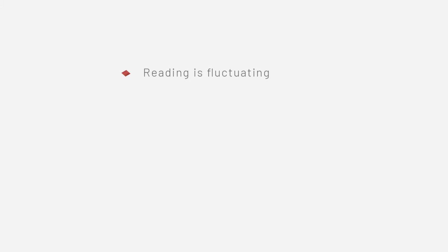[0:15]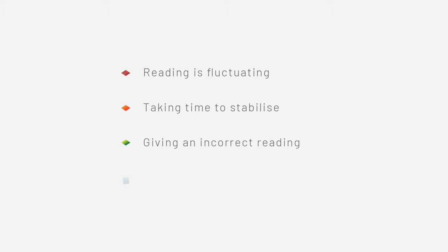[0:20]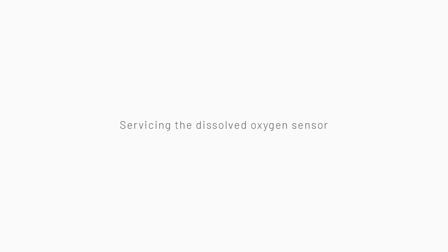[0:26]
Today, I'd like to show you how to service the sensor on an OxyGuard portable dissolved oxygen meter. We should change the membrane when the reading is fluctuating, taking time to stabilise, giving an incorrect reading, or the actual membrane is physically damaged. Other than that, no routine maintenance is required.
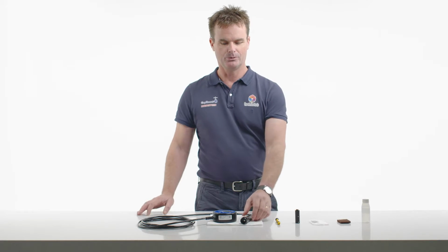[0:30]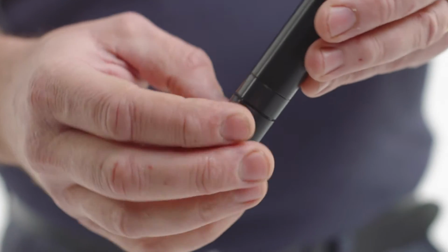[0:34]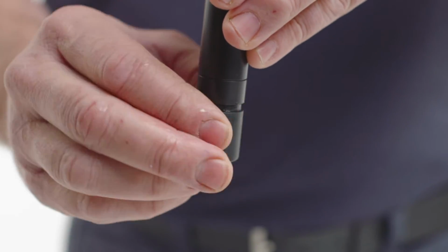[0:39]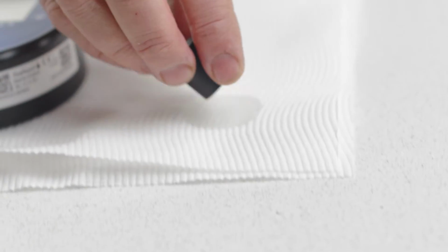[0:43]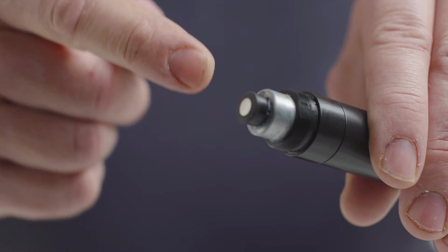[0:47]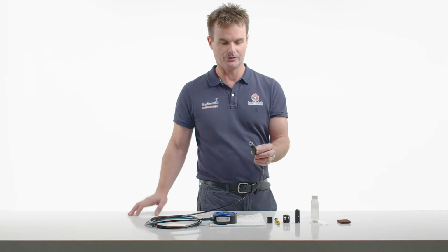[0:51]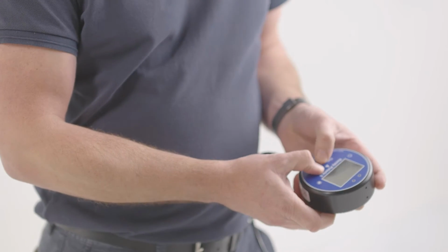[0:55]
To service the probe, remove the membrane protector. Unscrew to remove the cap, and you may notice a small amount of electrolyte inside. Simply dispose of the electrolyte. Being a galvanic cell, it has an anode and a cathode on the end. Therefore, without any electrolyte, there's no voltage from the probe whatsoever. So when the probe is clean and dry, there should be a zero reading.
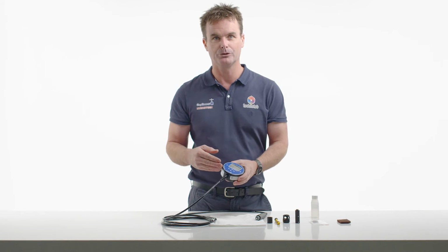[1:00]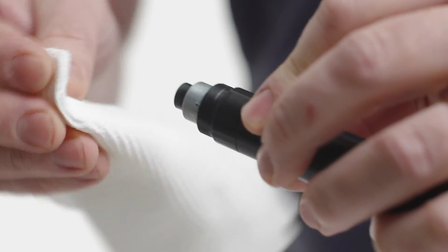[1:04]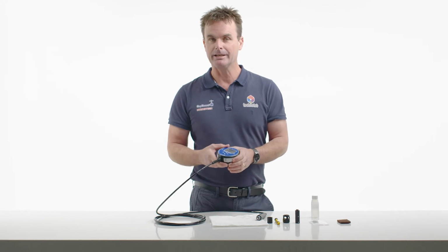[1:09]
If you're finding there's a background reading between 0.1 and 0.2 milligrams per litre, the probe may require a little further cleaning. Or, if the background reading cannot be removed by cleaning and drying, then the instrument may need to be returned to Technolab for further investigation.
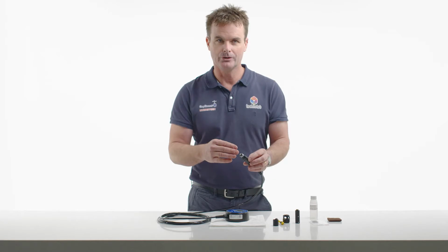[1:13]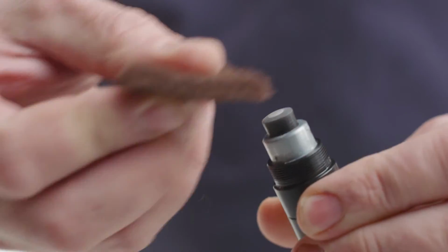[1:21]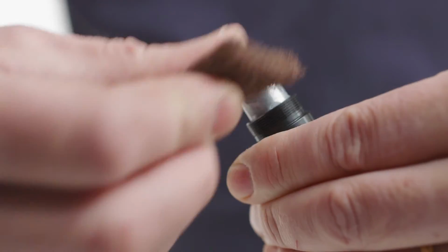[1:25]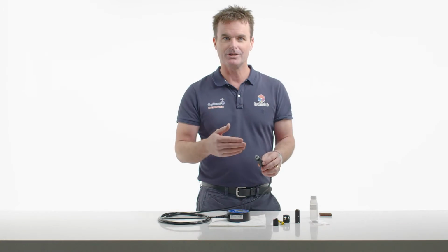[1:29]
You may also notice white deposits around the probe. These are dried electrolyte salts. You can clean these with a scouring pad, which comes as part of our kit. It's very important just to give the end of the probe a light scour in a rotating fashion to gently clean the cathode. The probe is now clean, dry and bright. The meter reads zero and we're now ready to change the membrane.
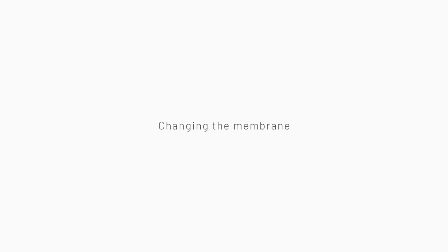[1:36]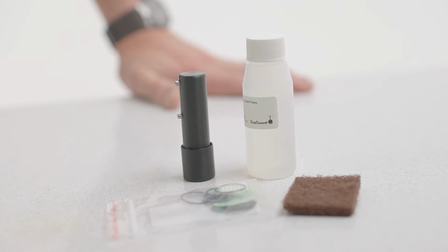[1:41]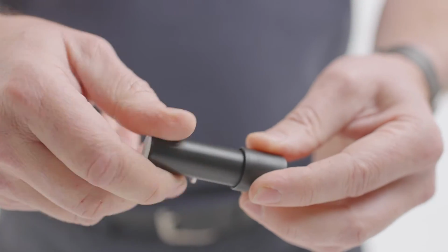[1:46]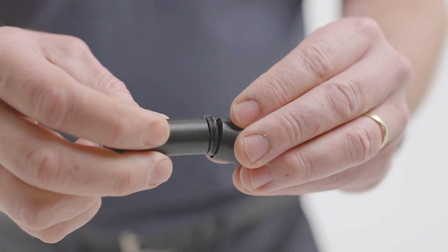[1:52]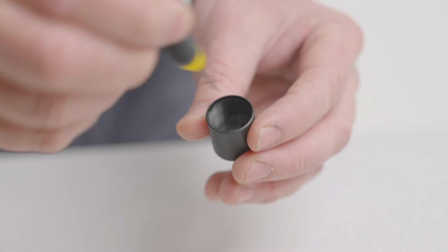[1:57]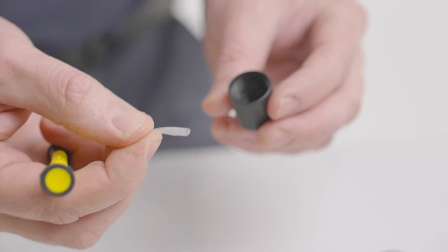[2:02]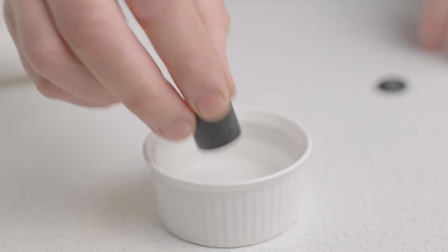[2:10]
The universal tool supplied in the kit will open the back of the meter and also removes the template which is holding the membrane in place. Simply rotate to take the template out of the cap. Use a small screwdriver to carefully remove the membrane. You'll also need to remove the small O-ring too. The O-ring and the membrane should always be changed at the same time. The cap can then be rinsed in fresh water, and any white powdery crystals will be dissolved once cleaned.
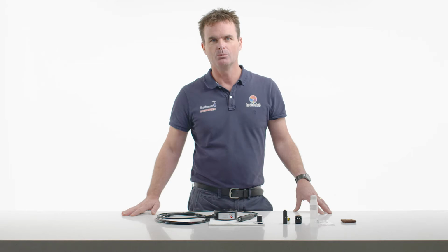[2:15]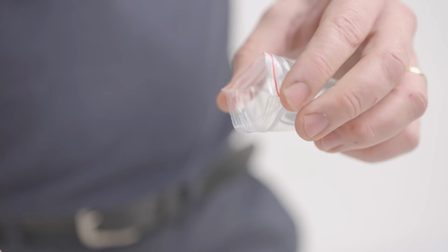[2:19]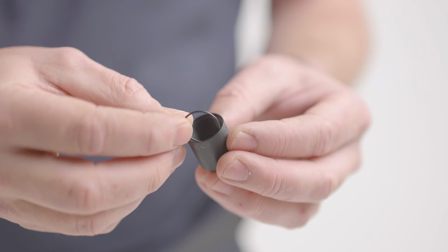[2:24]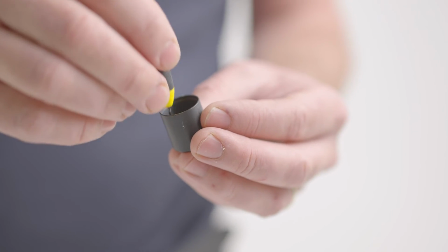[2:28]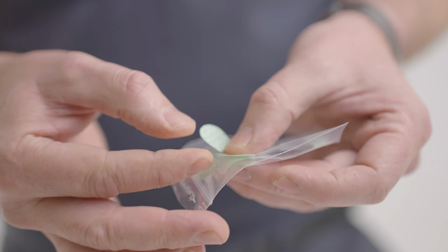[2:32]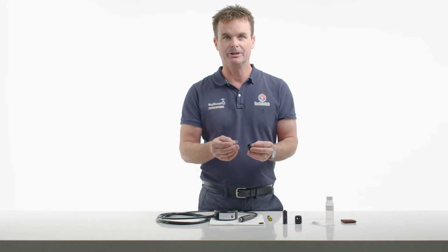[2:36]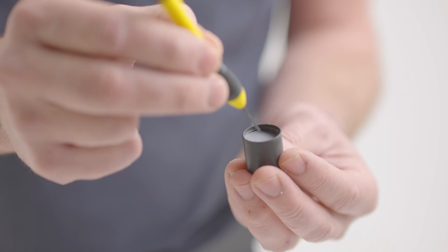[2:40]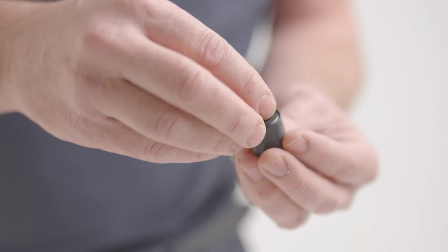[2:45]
To reassemble, we replace the O-ring first. A pack of 10 membranes and O-rings comes as part of the kit. The O-ring goes in the bottom of the cap. It's handy having something to move the O-ring into place. Next, take a membrane from the pack. Remember to remove the paper separator too. Place the membrane roughly into position towards the bottom. Then screw the template about two-thirds of the way down.
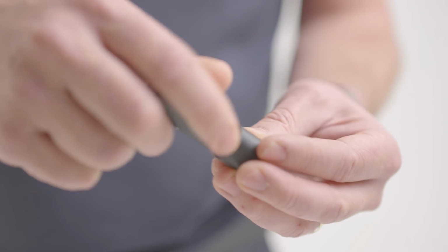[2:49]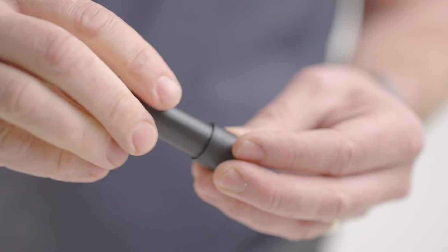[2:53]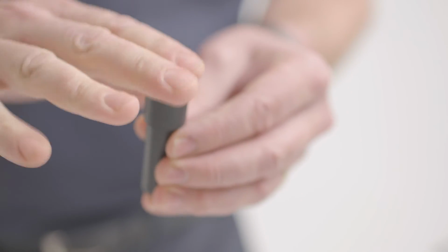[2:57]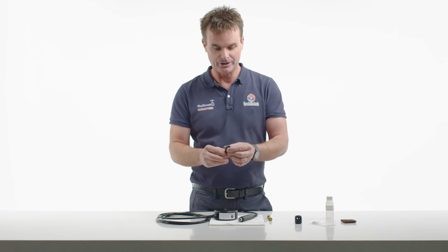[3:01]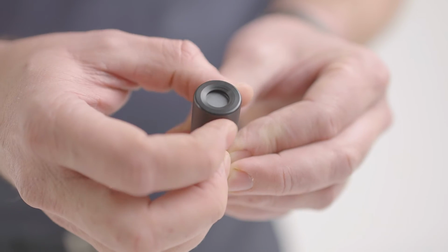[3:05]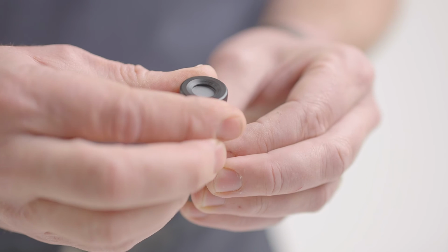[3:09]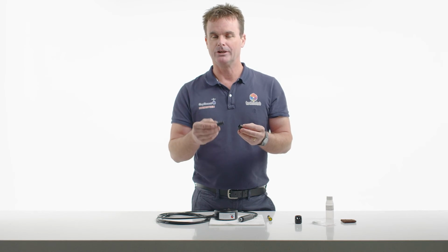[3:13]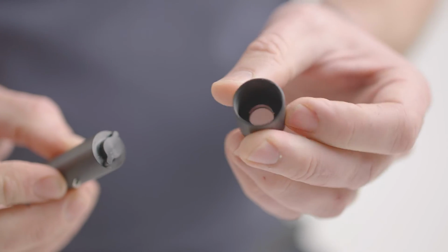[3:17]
Invert the cap and tap the membrane down onto the template. The membrane should be rotating on top of the template. This is self-centering the membrane. Continue to screw the template until it feels home. Be careful not to over-tighten, as the membrane may wrinkle and not seal correctly. The next step is to add some electrolyte.
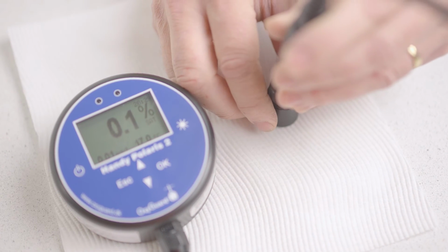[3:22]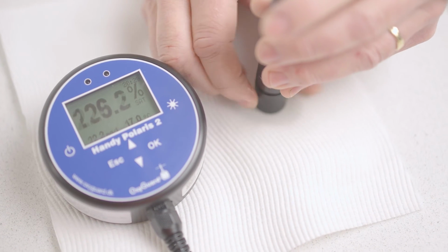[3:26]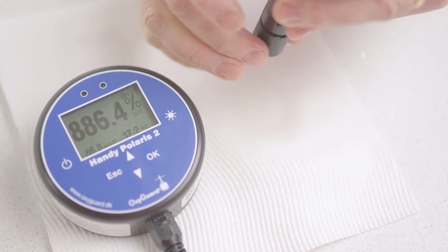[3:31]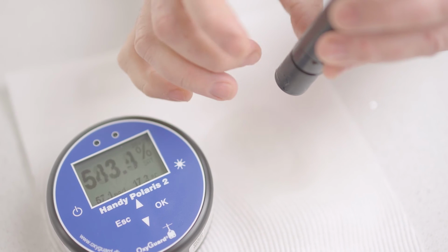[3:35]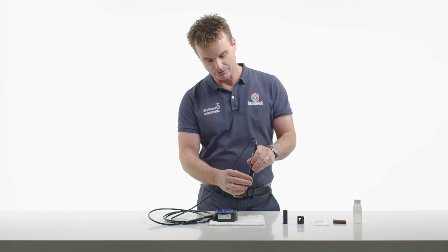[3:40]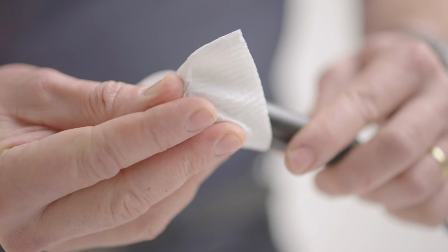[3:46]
Fill the cap three-quarters full, then take the probe and screw it in a few turns. The reading will now spike to a high value. This is a good sign and a good response from the probe. The reading will then head back towards 100% quite quickly. Flick the side of the probe just to release any air bubbles. Any excess electrolyte will drip out, and tighten firmly. We can now dry the membrane as it's quite robust. Replace the probe protector and that's done.
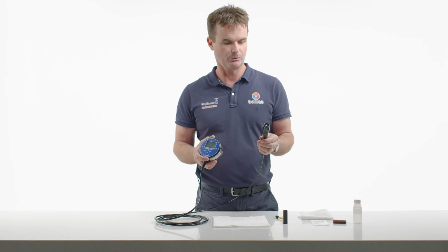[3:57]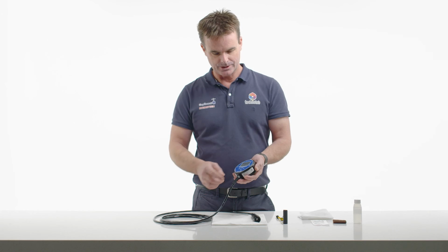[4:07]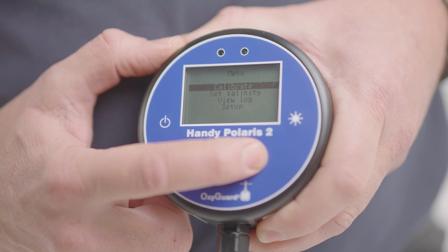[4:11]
The meter will now need 10 to 15 minutes for the probe to reach equilibrium for temperature and the dissolved oxygen value to stabilise. Then the meter is ready for calibration. Simply go to the menu, push calibrate, and OK.
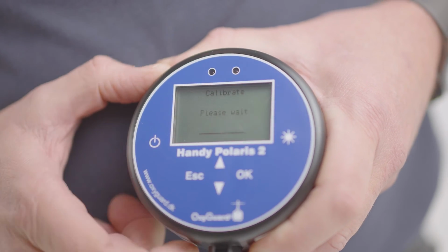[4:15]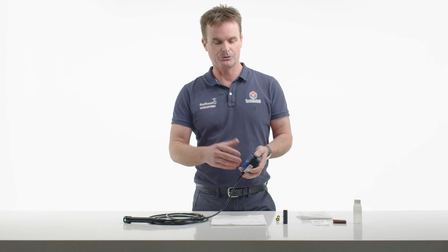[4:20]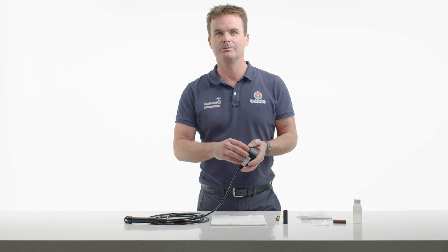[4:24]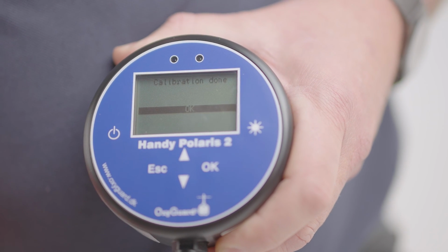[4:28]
Whilst the meter is calibrating, you may find over the next 24 hours that you'll have to calibrate the meter every time you turn it on. This is because the probe needs to come to true equilibrium. Calibration done, the meter is now ready for use.